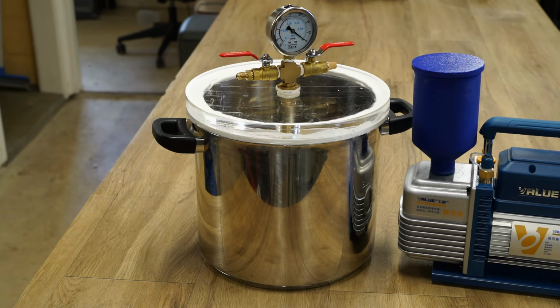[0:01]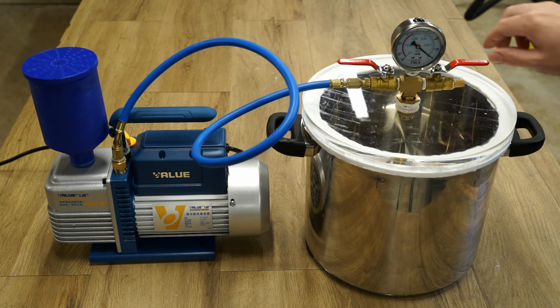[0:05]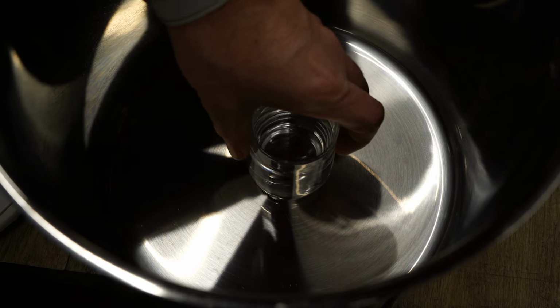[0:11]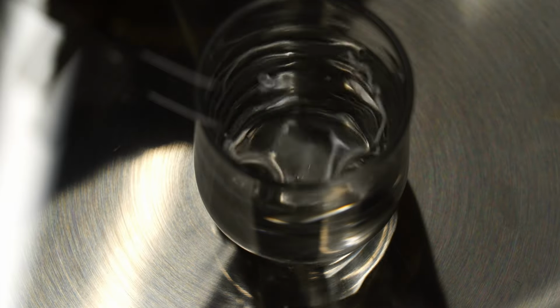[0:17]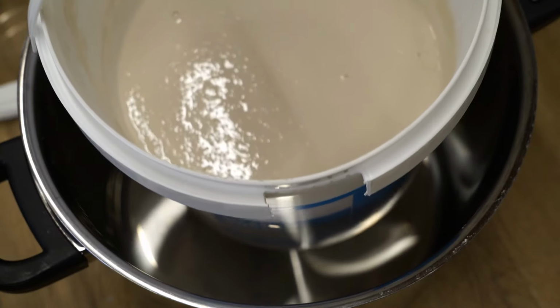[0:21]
In this video, I'll be putting together a vacuum chamber. These can be incredibly useful for a multitude of science experiments, such as boiling room temperature water. Or in my case, for degassing liquids to eliminate air bubbles.
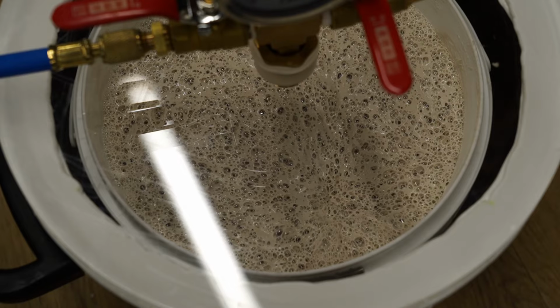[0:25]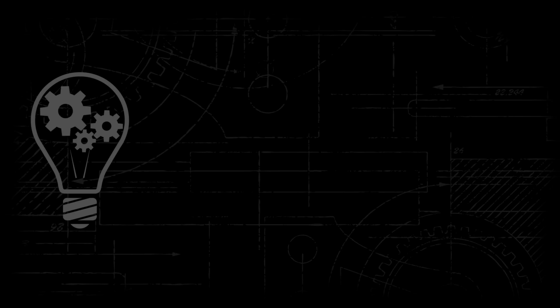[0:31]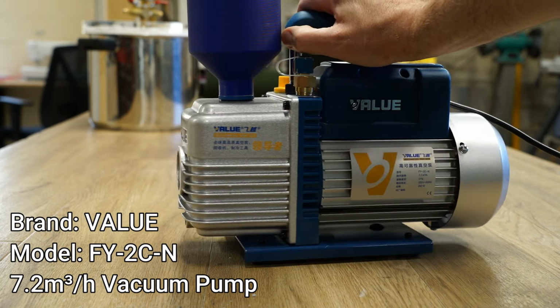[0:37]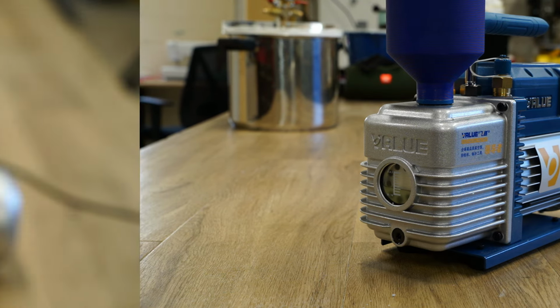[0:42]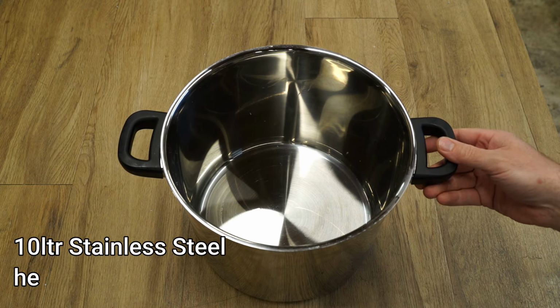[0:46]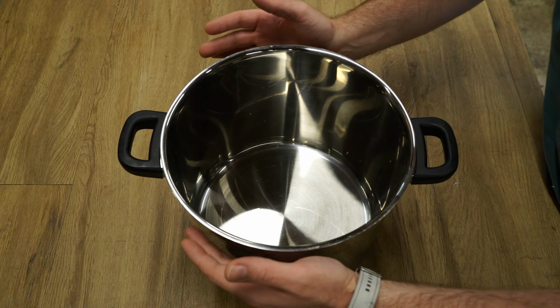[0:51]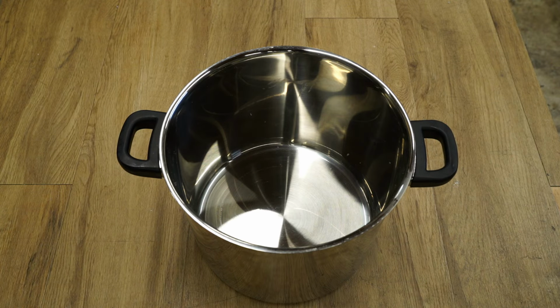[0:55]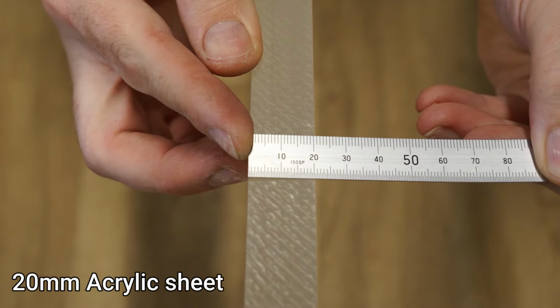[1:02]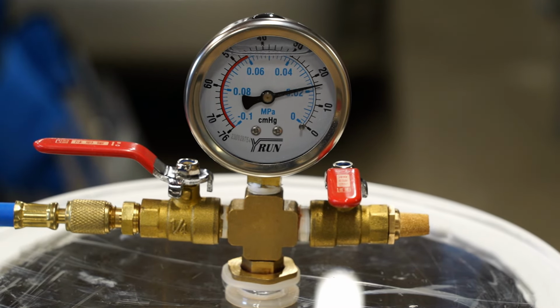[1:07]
I purchased this vacuum pump from AliExpress, which was a bargain at only $185 US at the time of making this video. For my chamber, I used a sturdy 10-litre stainless steel stock pot. To prevent the pot from imploding at full vacuum, it's important to find a pot with a good wall thickness. The lid will be cut from 20mm thick acrylic plastic. And the gauge, fittings and taps come as a kit set from AliExpress for only $30 US.
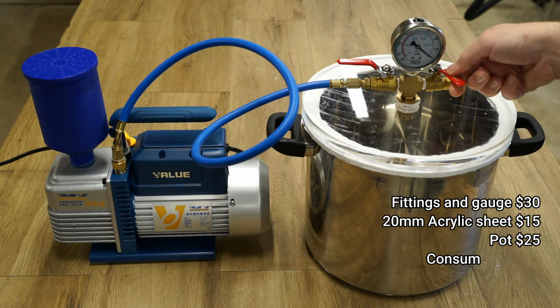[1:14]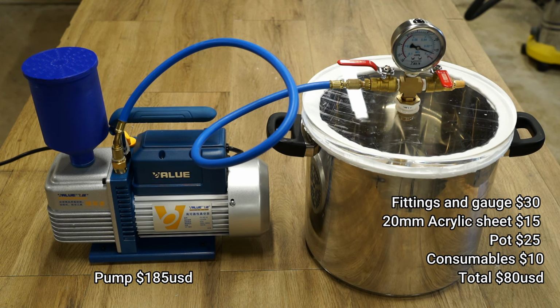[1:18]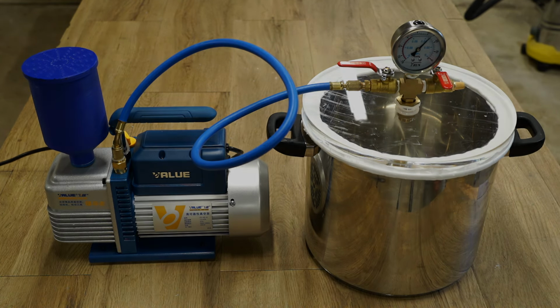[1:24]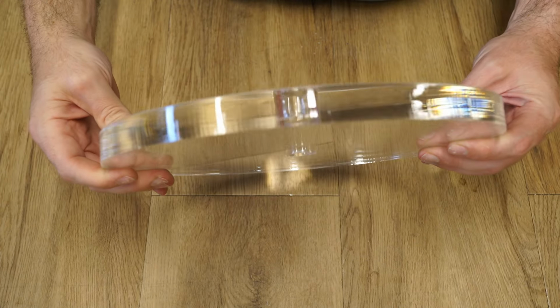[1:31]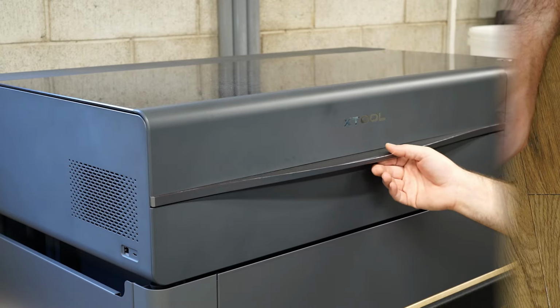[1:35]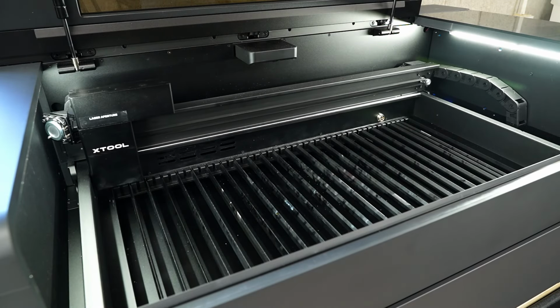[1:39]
First, I had to cut the 20mm sheet acrylic to fit the pot. This can be done with a jigsaw or bandsaw or other tools. However, since I have a brand new xTool P2 CO2 laser machine in the workshop, it would be a crime not to put it to use for this job.
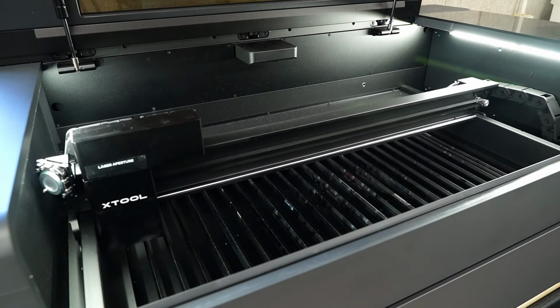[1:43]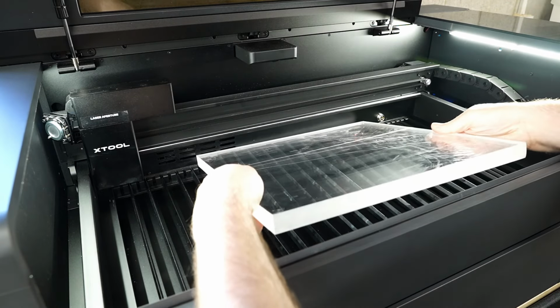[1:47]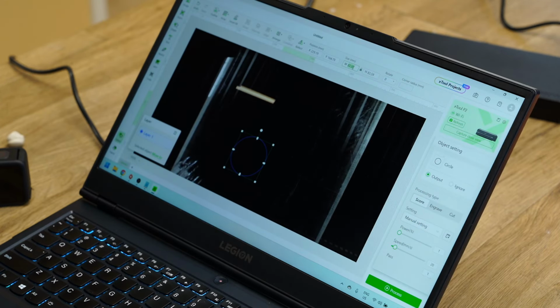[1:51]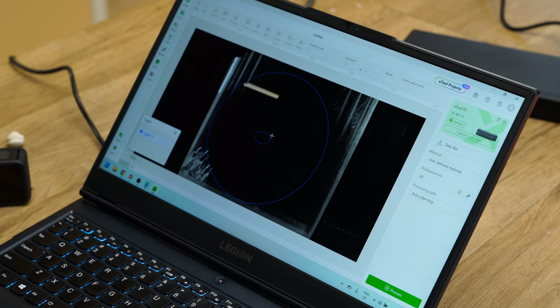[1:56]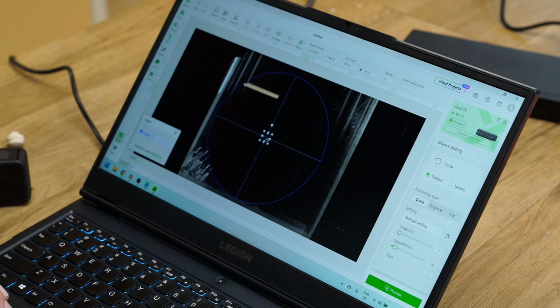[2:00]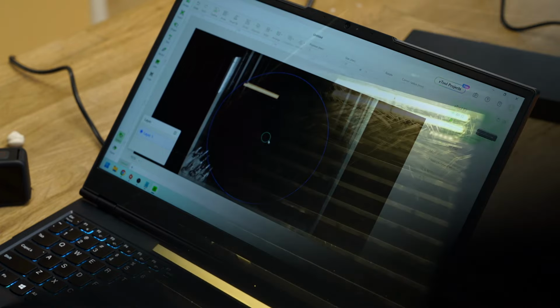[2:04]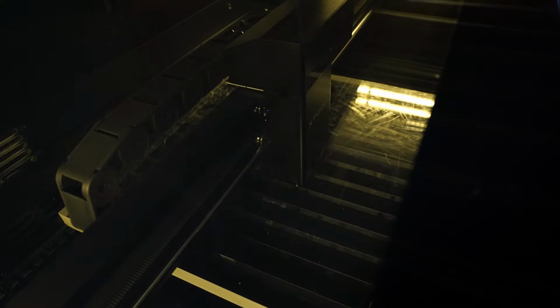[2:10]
The xTool software made it super simple to draw the tool path for the lid. For this job, I required a 21mm hole to mount the air fittings, and an outside cut diameter of 280mm. With the job sent to the P2 laser machine, it's time to start cutting. 20mm thick acrylic is the limit for this machine. The feed rate was a rather slow 1mm per second at 100% power and a single pass.
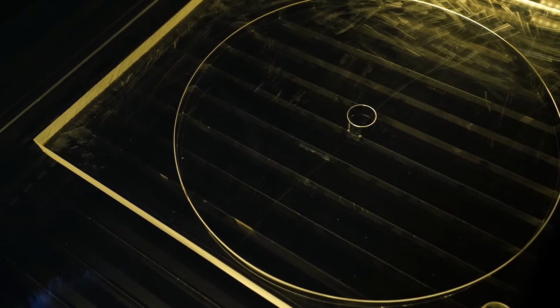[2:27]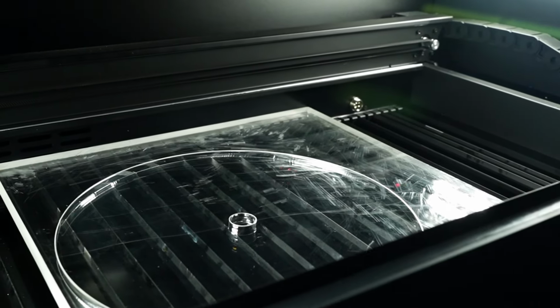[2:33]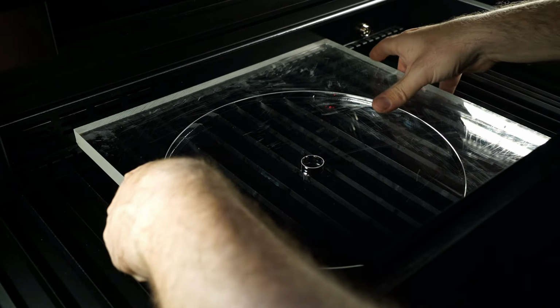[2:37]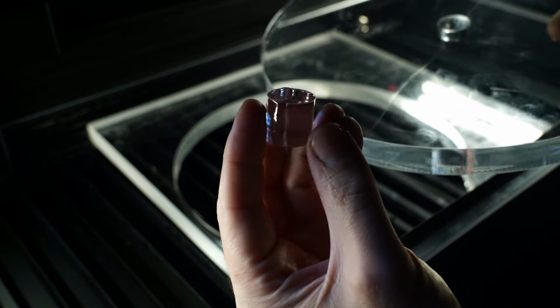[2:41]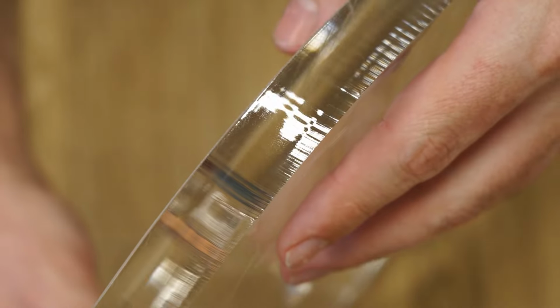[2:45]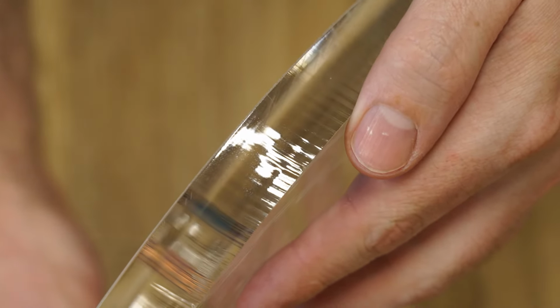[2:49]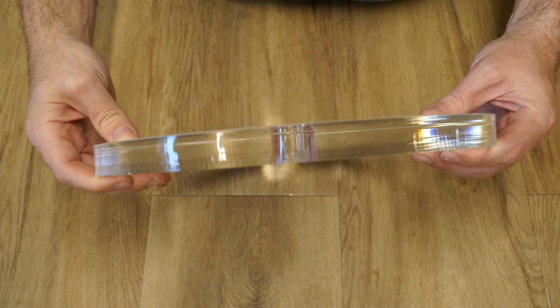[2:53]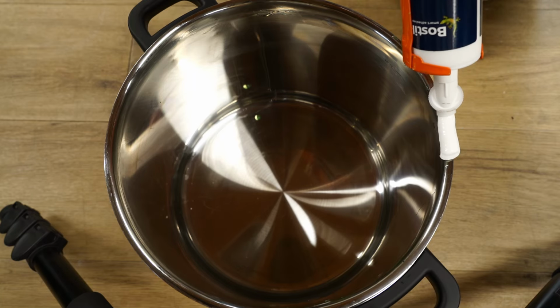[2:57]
And while the cut isn't the smoothest I've ever seen, with some beam deflection causing some minor serrations towards the rear, overall the cut quality is more than acceptable for this type of job. Now I can move on to making the silicone seal.
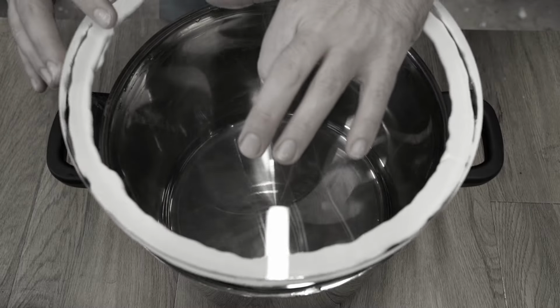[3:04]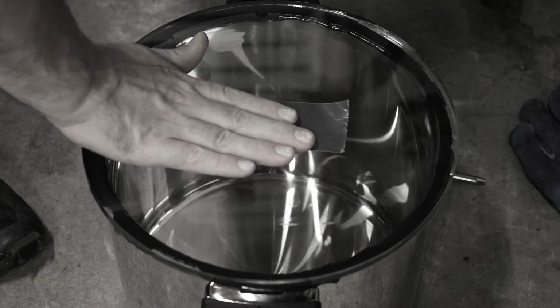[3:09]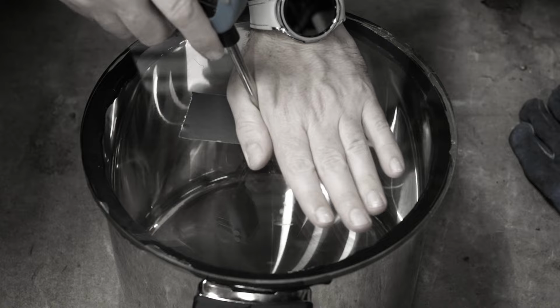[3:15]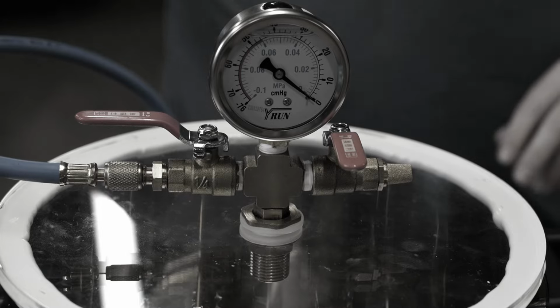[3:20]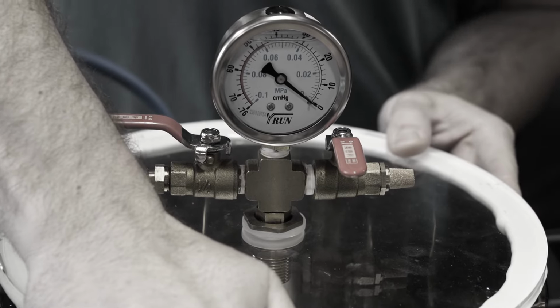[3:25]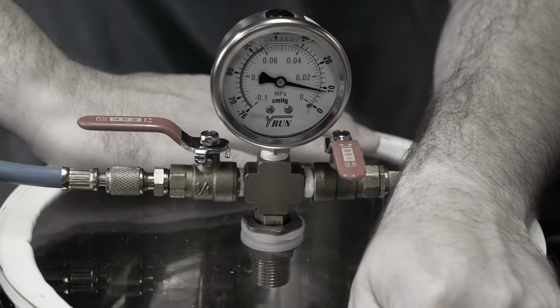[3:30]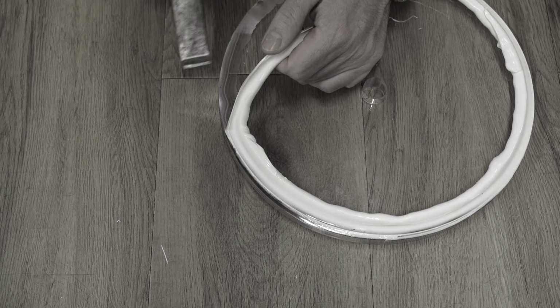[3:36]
I've tried several different methods for making a seal with varying levels of success or failure. I've had issues with release agents not releasing, seals too thin, which means you have to press down the lid hard to create an airtight seal, and a few other failures which I won't bore you with. Ultimately, this was the best method that worked for me.
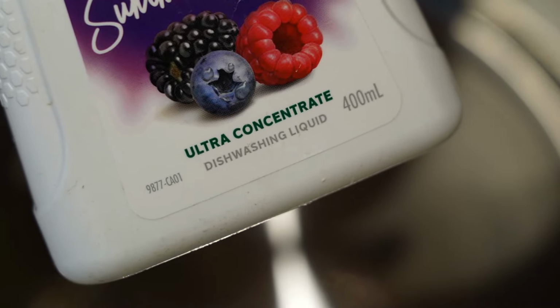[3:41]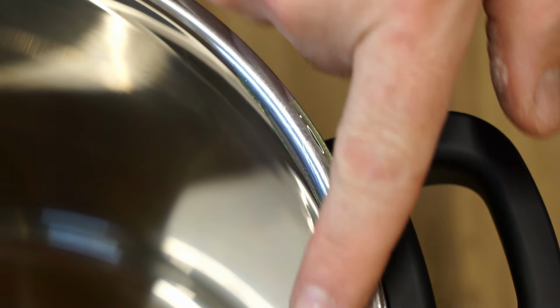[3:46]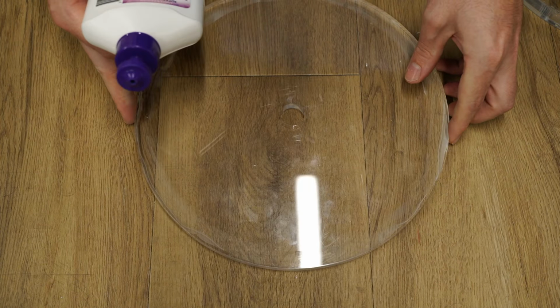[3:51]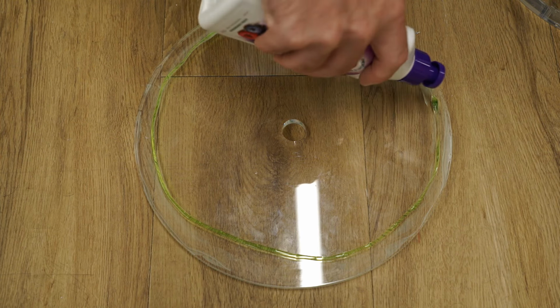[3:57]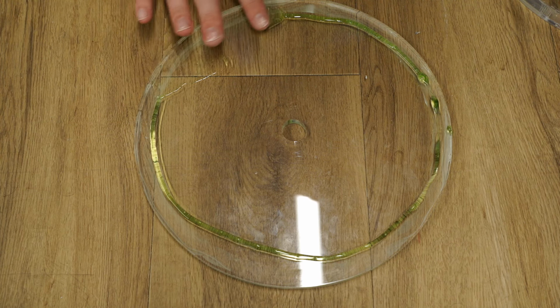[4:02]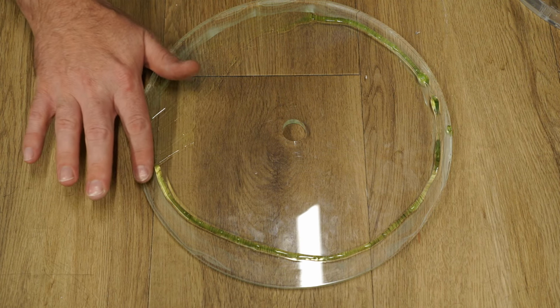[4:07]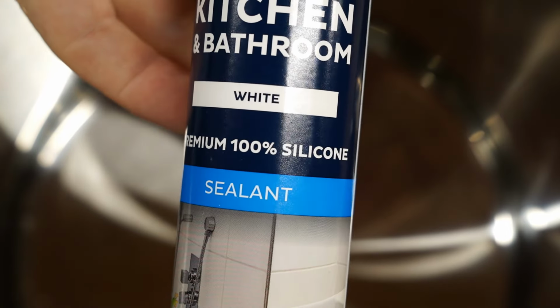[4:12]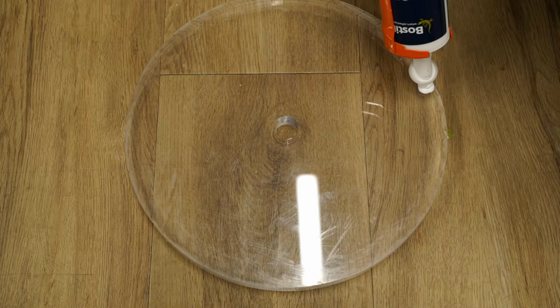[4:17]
First, dish soap works as a great release agent. Just be sure to use plenty of it. To compress the silicone flat, I used a 10mm thick piece of acrylic cut to the same dimensions as my lid, but you could use any plastic or metal sheet to achieve the same thing. First, I applied plenty of dish soap to prevent the silicone from sticking to my sheet of acrylic. Next, I used a tube of 100% pure silicone and applied a generous bead of silicone around the edge of the lid.
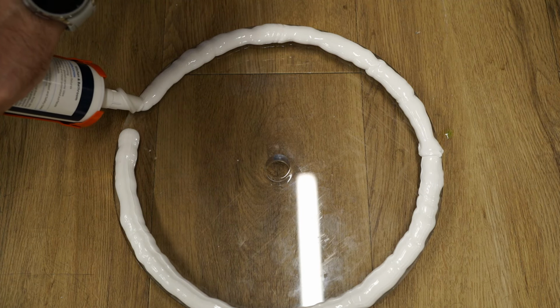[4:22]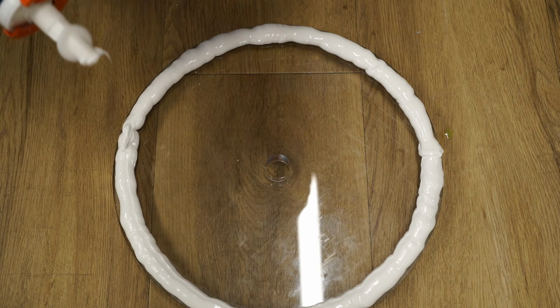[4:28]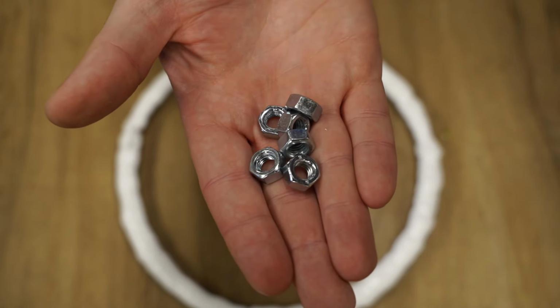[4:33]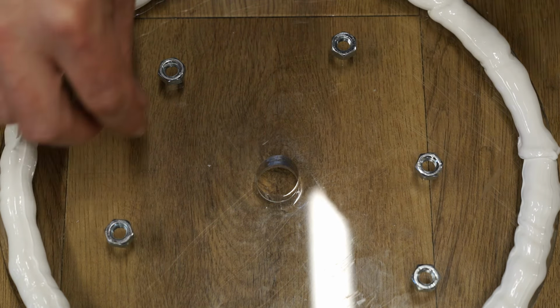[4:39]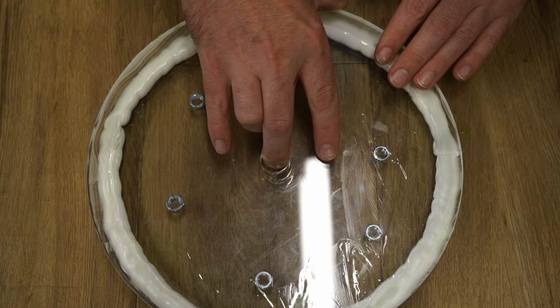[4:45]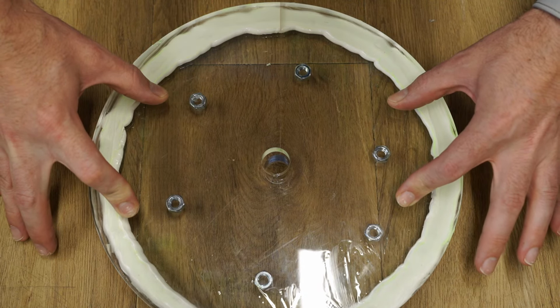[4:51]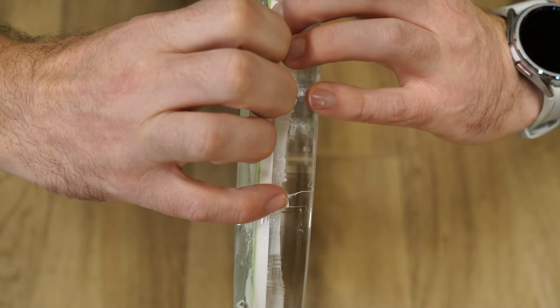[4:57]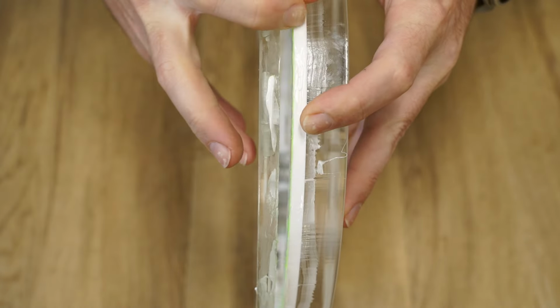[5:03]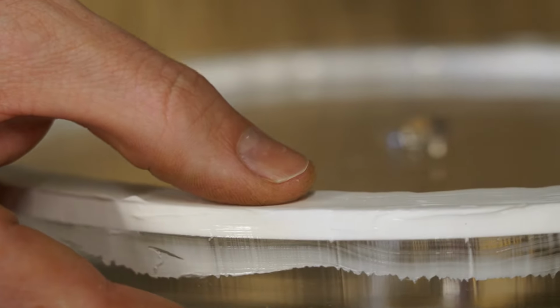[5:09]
To create an even thickness of silicone around the edge, I'm using several nuts as spacers in the center. Then I place the sheet of acrylic I prepared with dish soap beforehand on top to press the silicone into a flat seal. After allowing the silicone 3 days to cure, it was time to separate the lid. If there are any defects in the seal, simply clean off the soap and apply more silicone as needed.
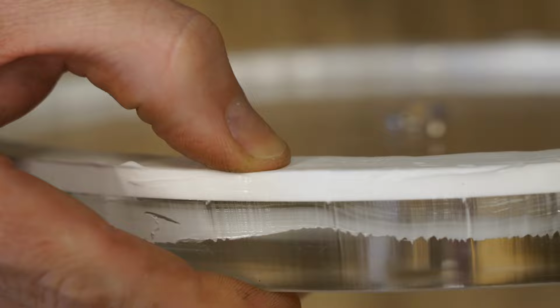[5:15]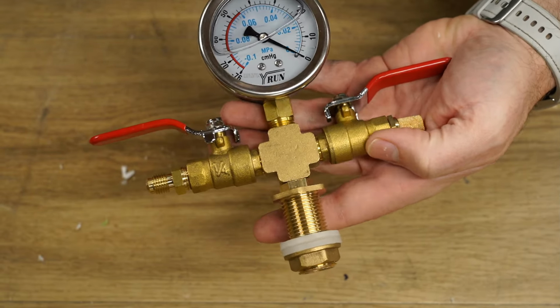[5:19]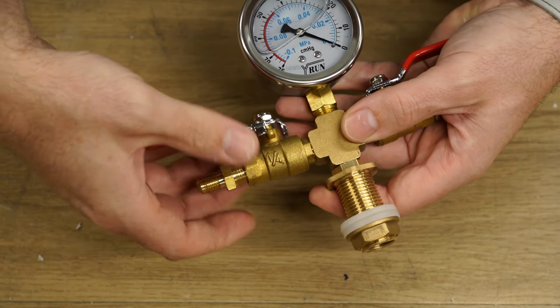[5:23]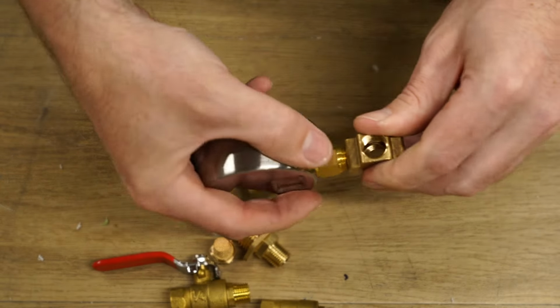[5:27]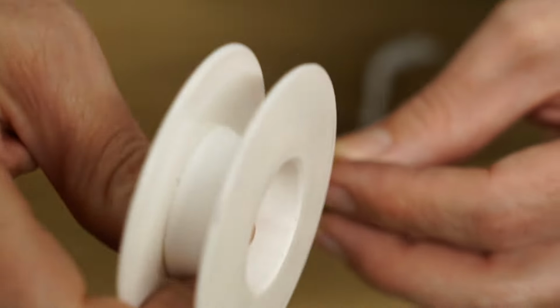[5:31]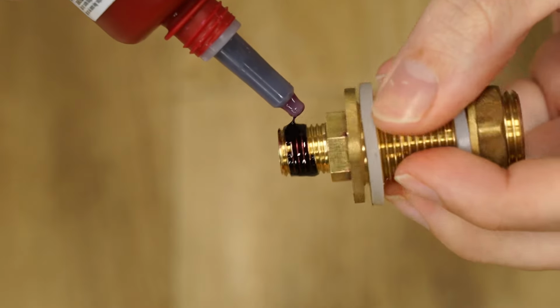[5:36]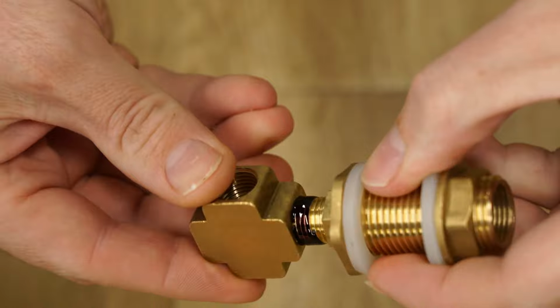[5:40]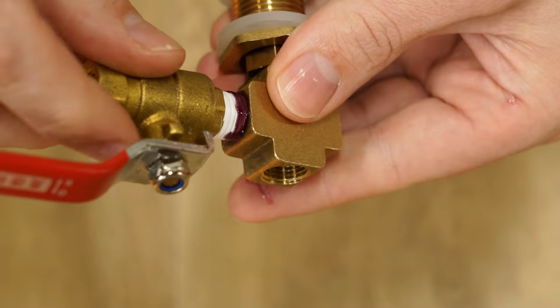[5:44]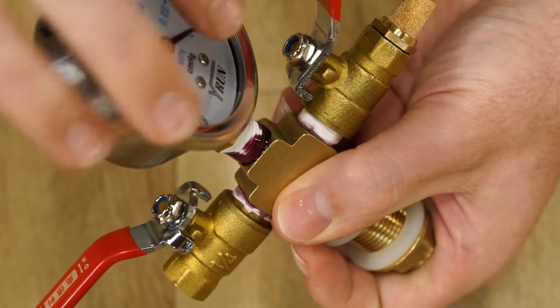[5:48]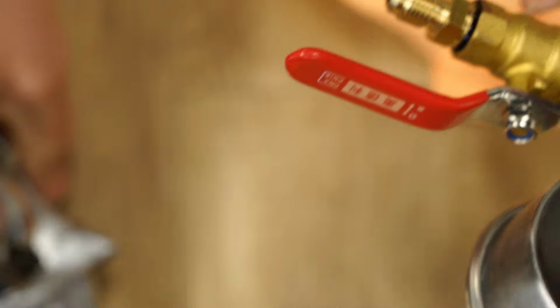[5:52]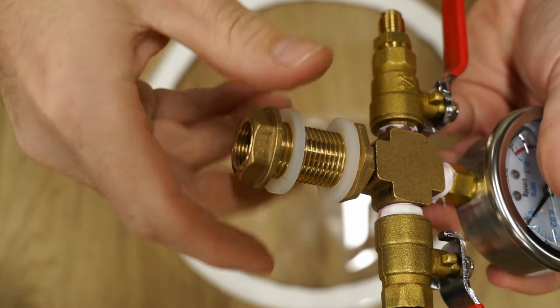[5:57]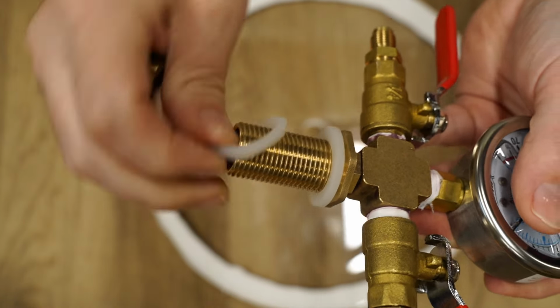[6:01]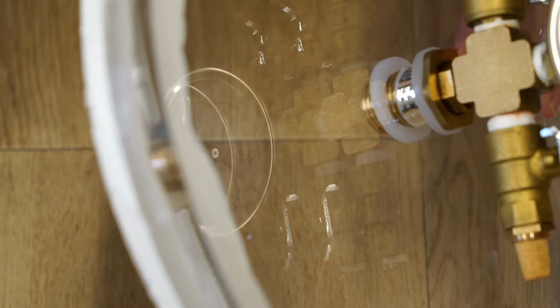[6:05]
With the lid finished, it was time to move on to assembling the air fitting kit. I used a combination of thread tape and liquid thread sealant. This proved to be a winning combo on the first try with zero leaks, as you'll see later. Now the fittings can be mounted to the lid using the included seals and hardware.
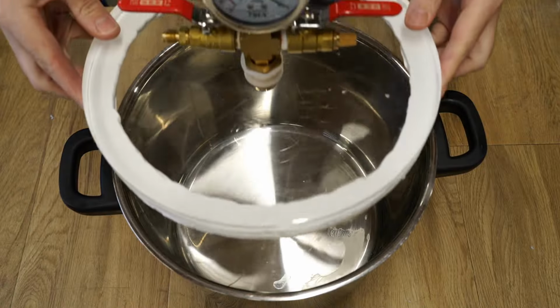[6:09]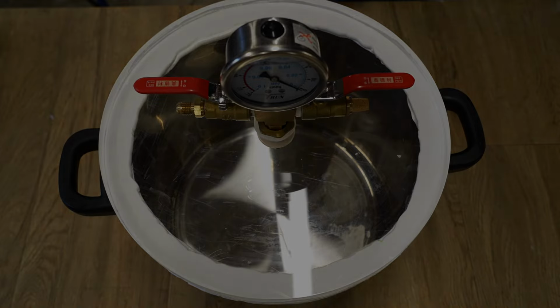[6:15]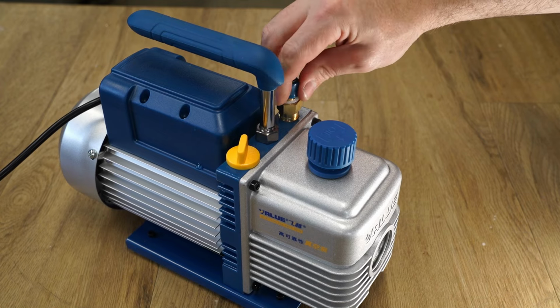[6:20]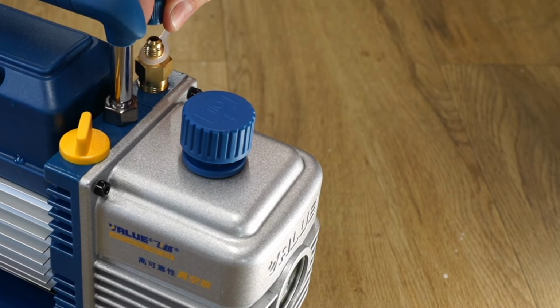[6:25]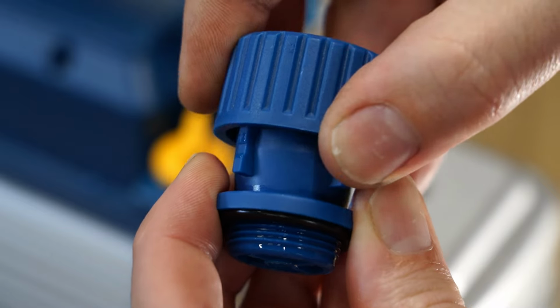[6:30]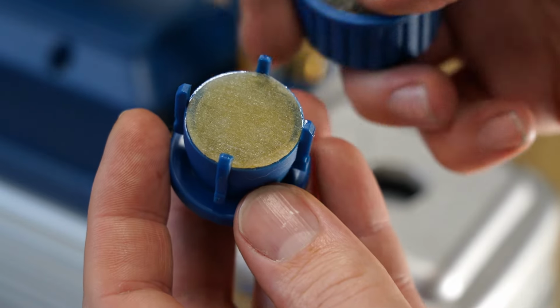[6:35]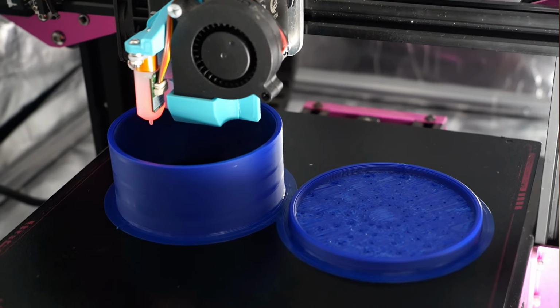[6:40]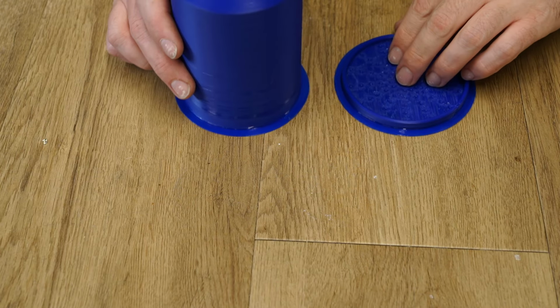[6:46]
With that done, I moved on to addressing a common issue with most vacuum pumps, and that is oil mist vapor from the exhaust. Unscrewing the vent cap, we find a filter paper and a metal wool disc, which is only designed to prevent dust and debris from entering the pump housing. To fix this oil mist issue, I 3D printed a filter housing using PETG filament.
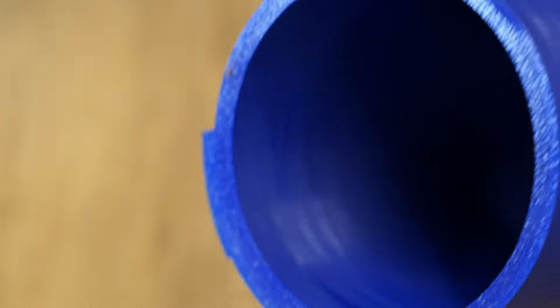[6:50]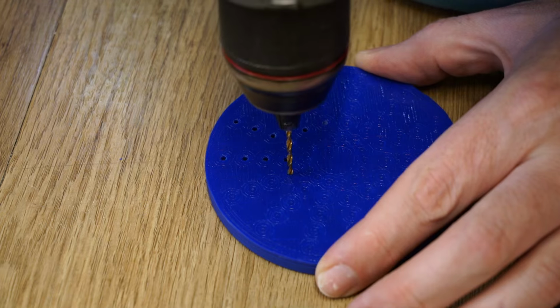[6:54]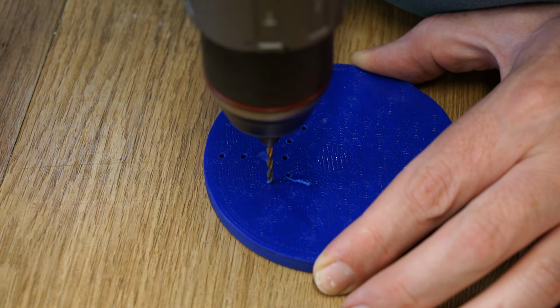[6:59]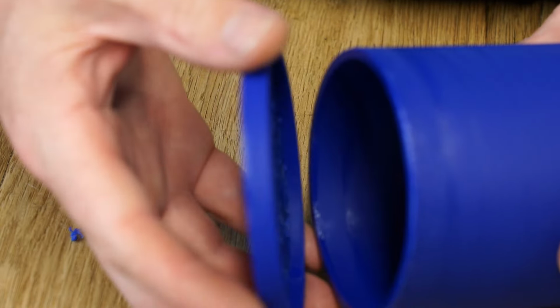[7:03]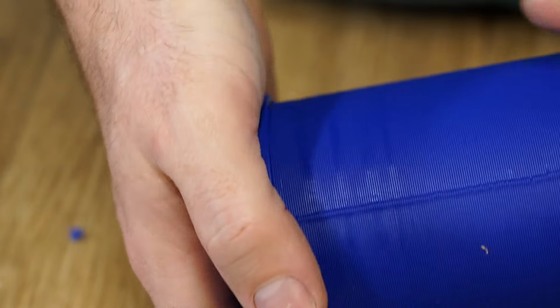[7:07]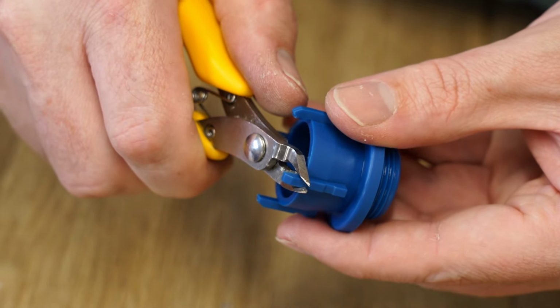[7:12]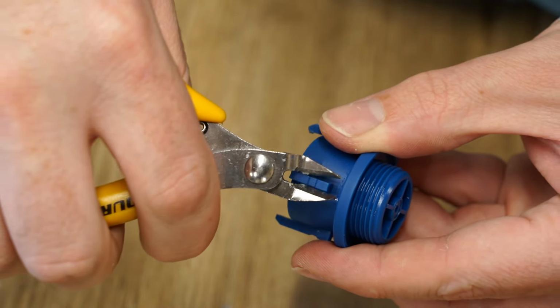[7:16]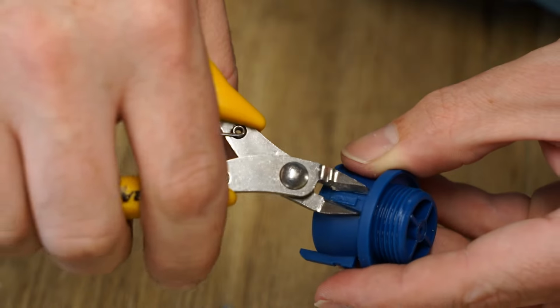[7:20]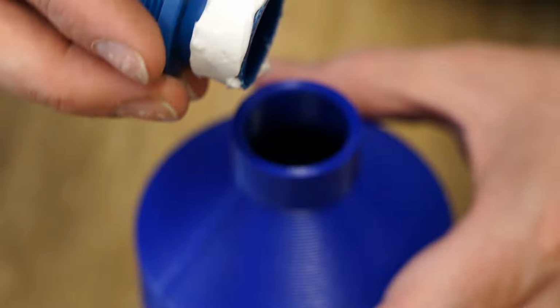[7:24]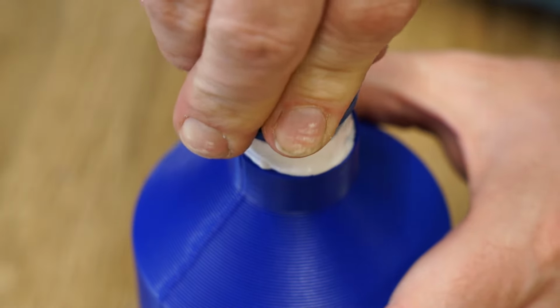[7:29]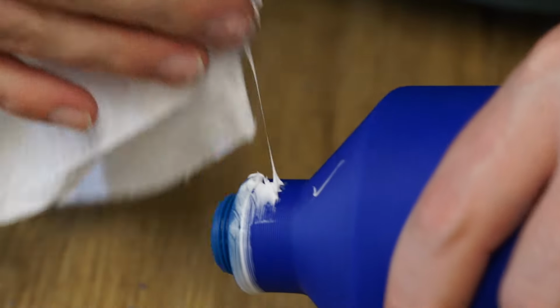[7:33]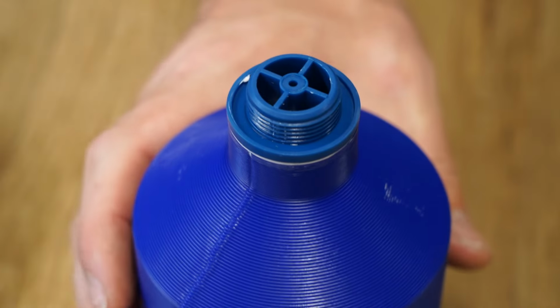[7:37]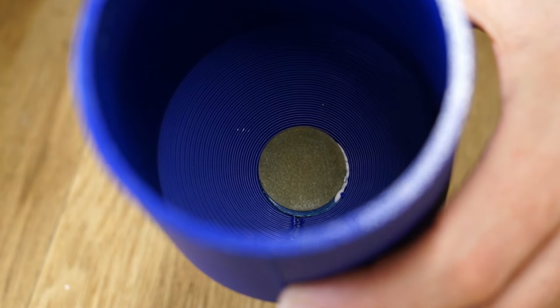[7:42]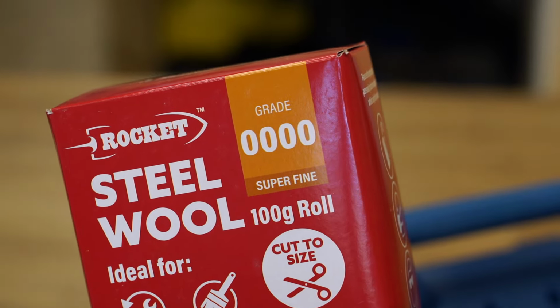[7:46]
After printing, I removed the extra build material and drilled out the holes in the lid. I'll modify the original vent cap so I can glue it using silicone into my filter housing. At the bottom of the filter, I'll use the original filter paper as a screen to prevent the fine-grade steel wool I'm using as filter media from falling into the pump housing.
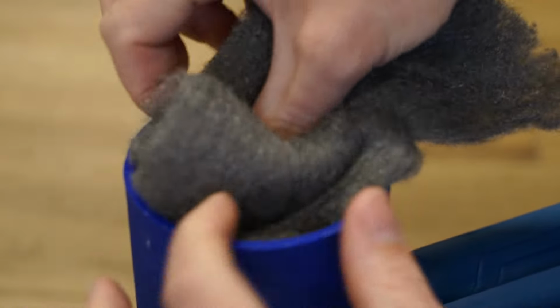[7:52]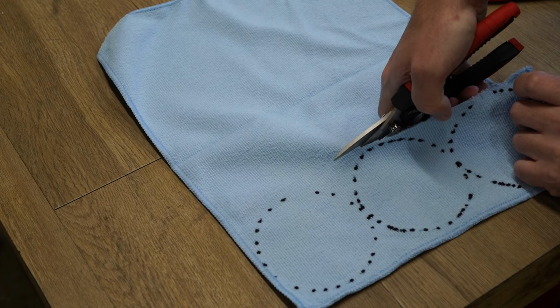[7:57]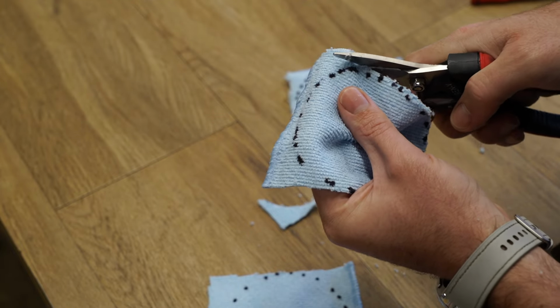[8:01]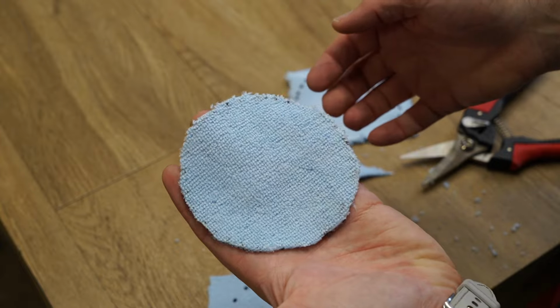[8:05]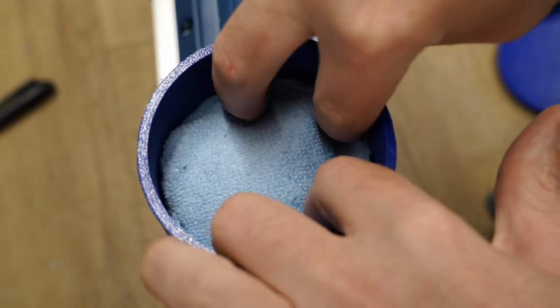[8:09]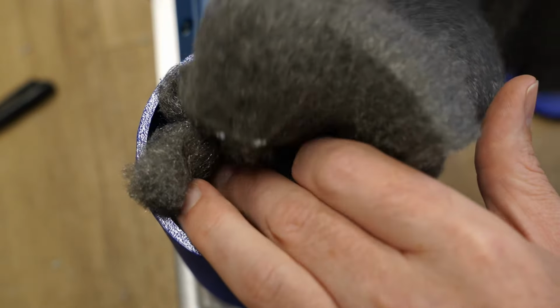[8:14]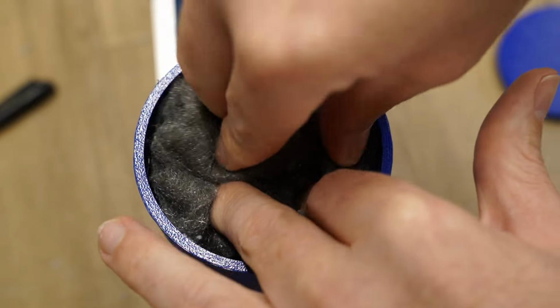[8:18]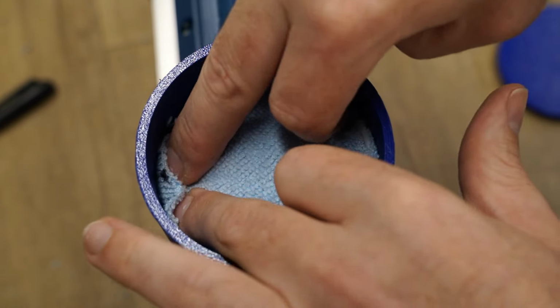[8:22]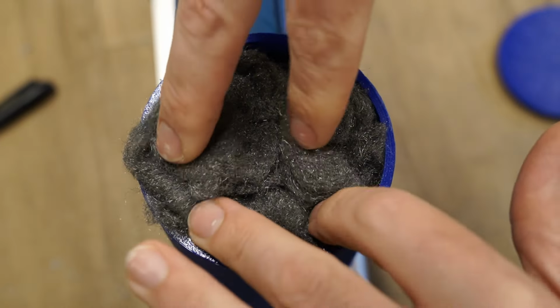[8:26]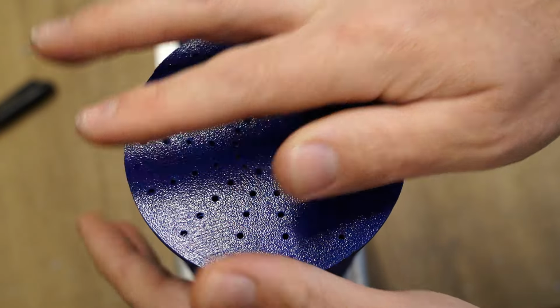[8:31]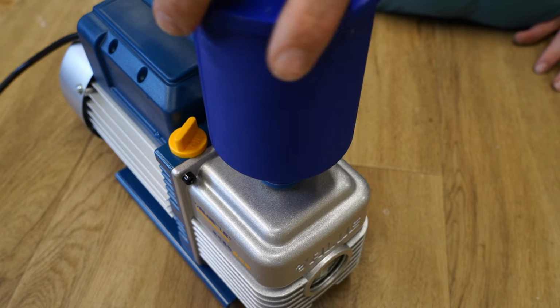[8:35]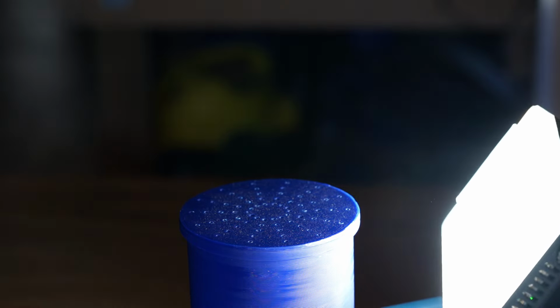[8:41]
I'll pack some in the bottom of the housing, then I cut three circles the size of my filter housing from a clean microfiber towel. The purpose of the towel is to capture any fine droplets of oil mist that manages to pass through the steel wool. I alternated layering the steel wool and microfiber towel until the filter was packed absolutely full. And after, I was delighted to see that there was no oil mist coming from the pump.
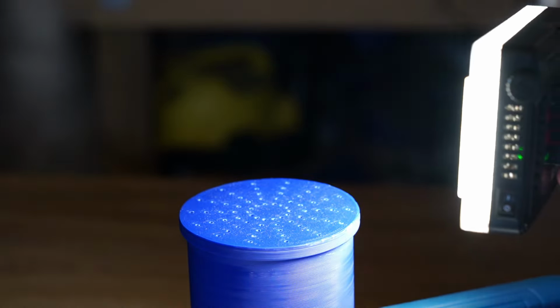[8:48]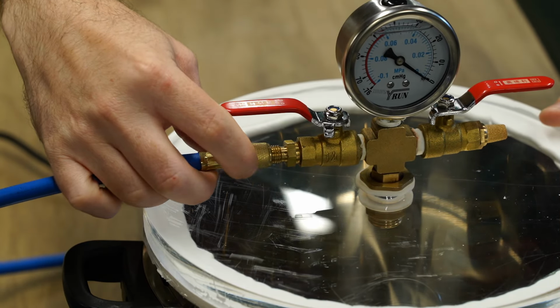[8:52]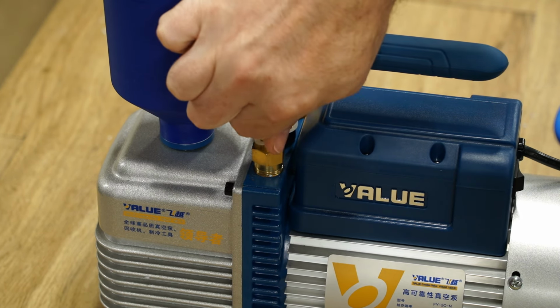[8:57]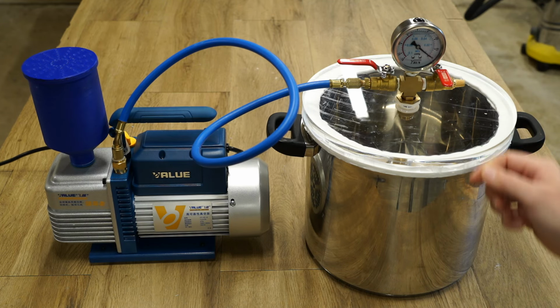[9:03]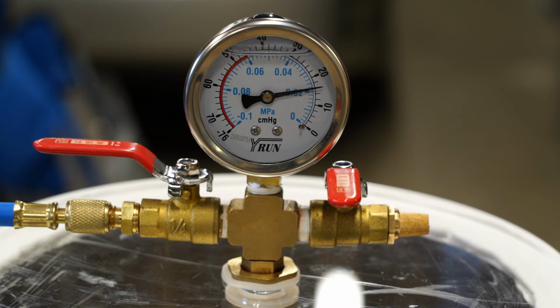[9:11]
Now I can connect the pump to the chamber using the included hose that came with the pump. Then close the vent tap and try pull a vacuum. After getting close to a perfect vacuum, I closed the outlet tap and disconnected the hose. After leaving the chamber for 30 minutes, I came back and the gauge hadn't moved, which meant there were no leaks and the chamber is ready to use.